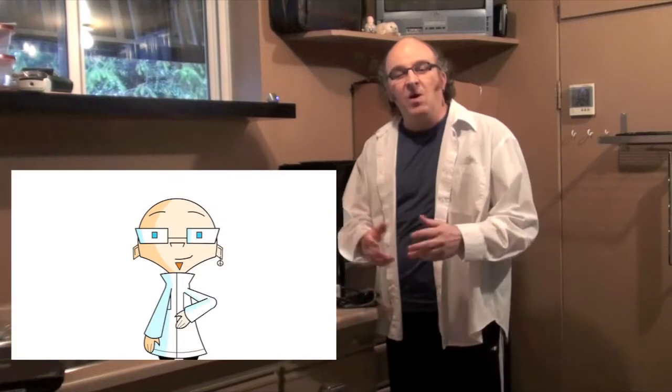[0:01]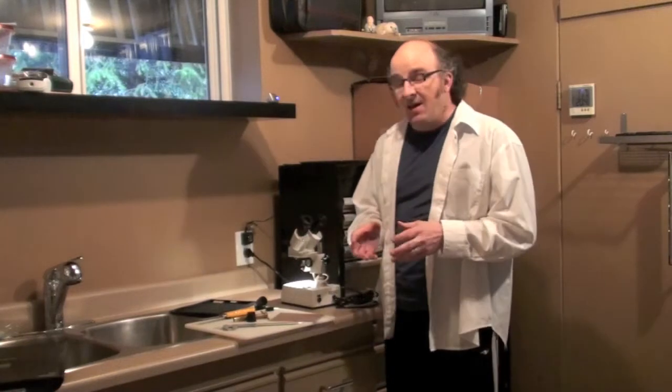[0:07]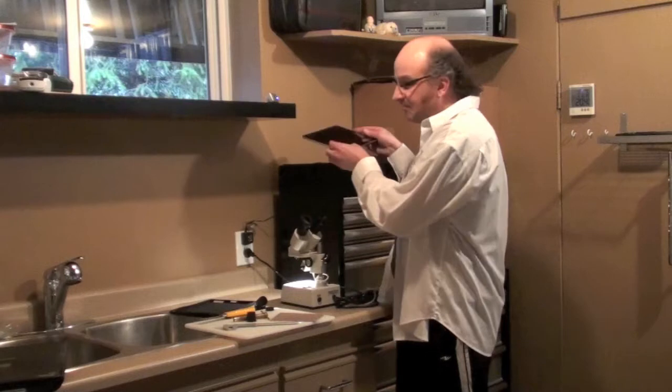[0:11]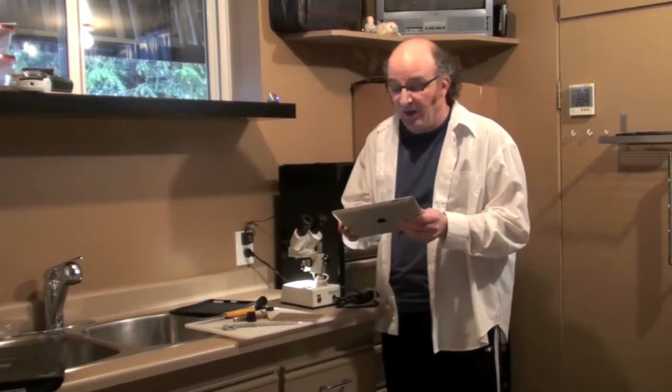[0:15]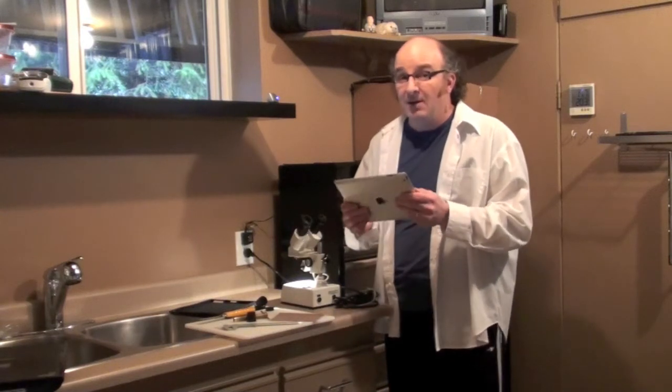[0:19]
Today we're going to do something a little bit weird. We're going to make an affordable microscope adapter for the iPad 3. And the really nice thing, and this will work for the iPad 2 as well, about the iPad 3 is the 5 megapixel camera, which makes it great for taking nice sharp pictures.
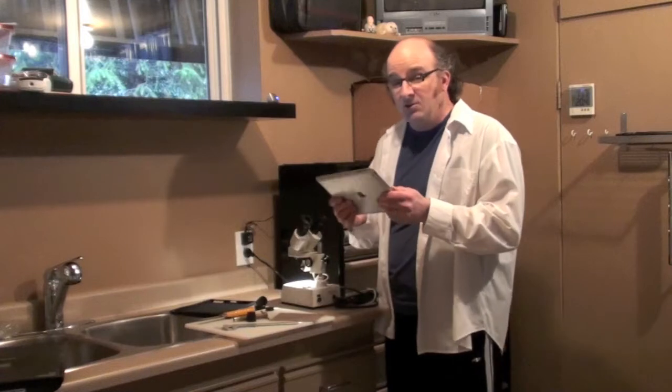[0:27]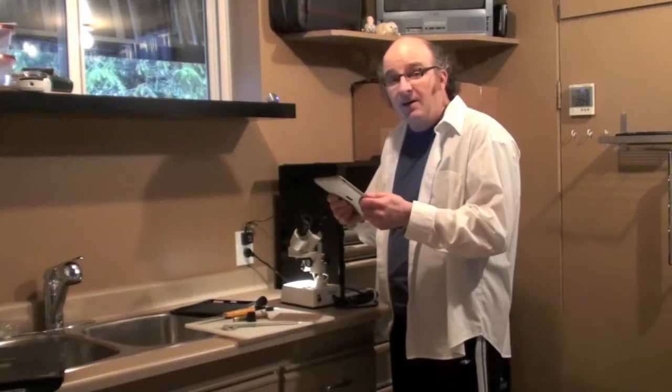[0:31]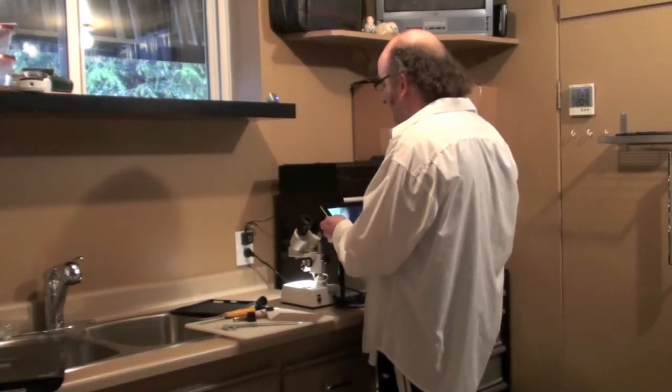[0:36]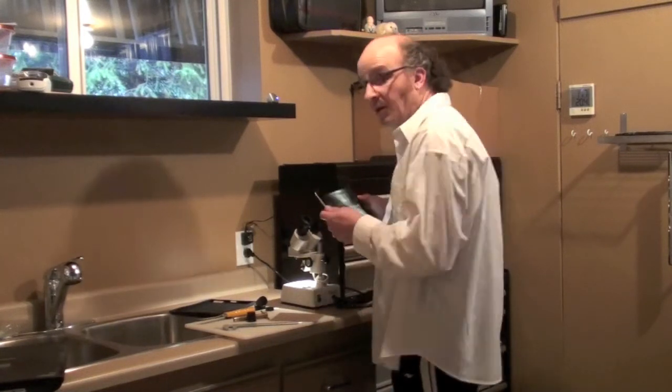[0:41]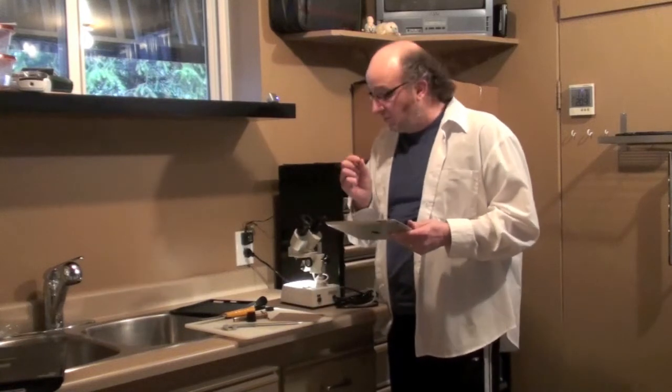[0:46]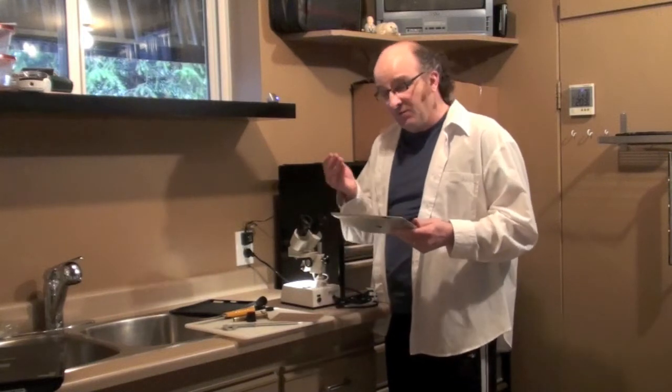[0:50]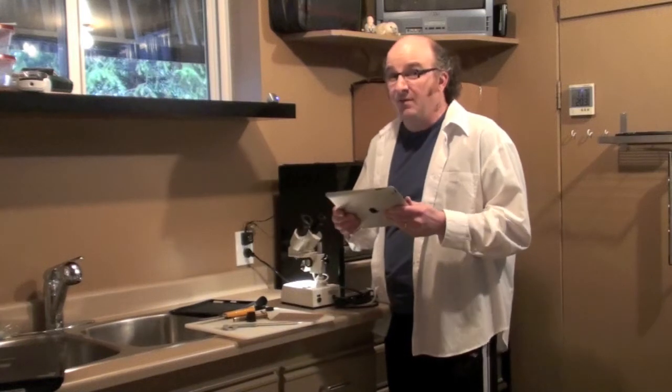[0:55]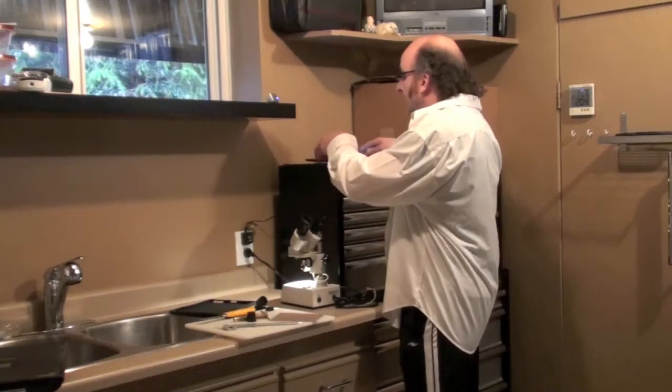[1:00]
Now if you want to use your iPad 3 to take images with your microscope, you can do it without any adapter. Just fire up your camera, and hold it in just the right position over the ocular lens, and at the right distance as well. But the lens of the camera is so small, and you have to hold it a distance from the microscope ocular lens, that it'll pretty much drive you crazy trying to hold it in the correct position. So to make an adapter,
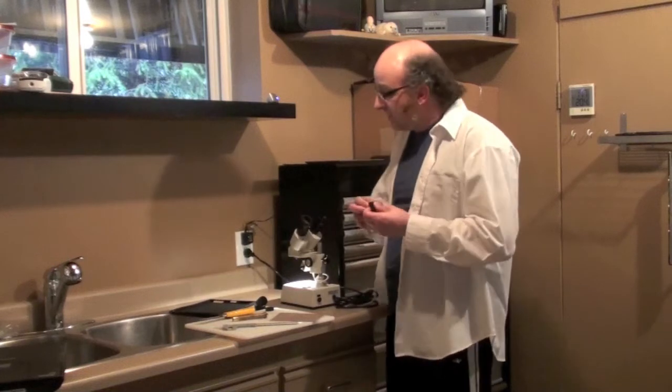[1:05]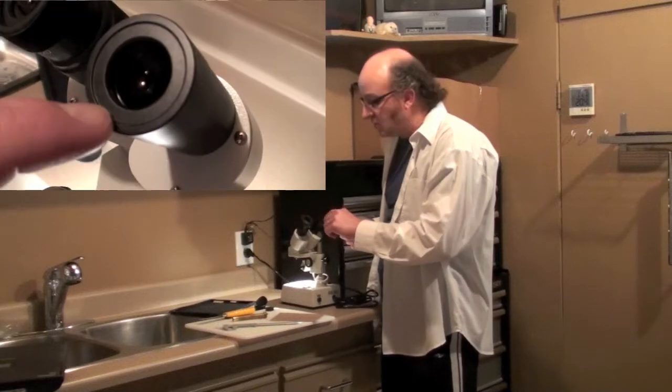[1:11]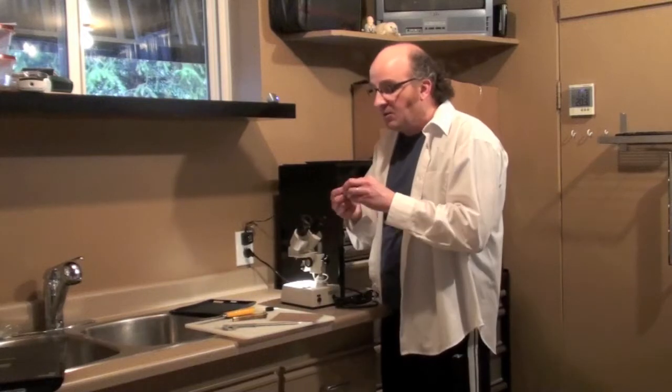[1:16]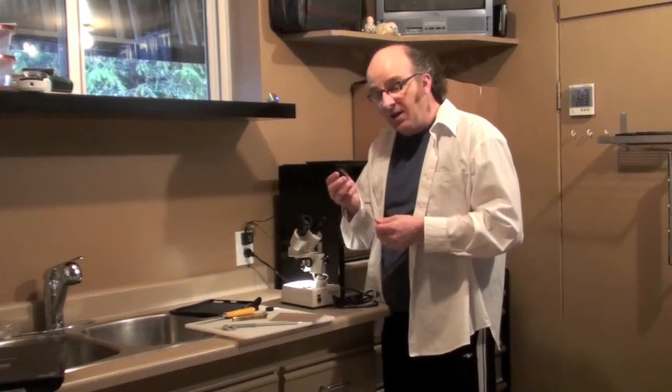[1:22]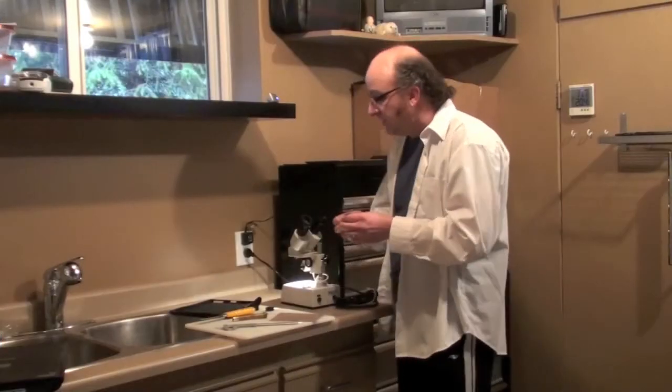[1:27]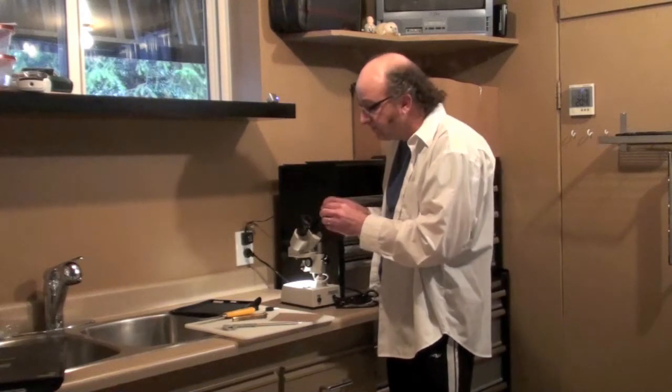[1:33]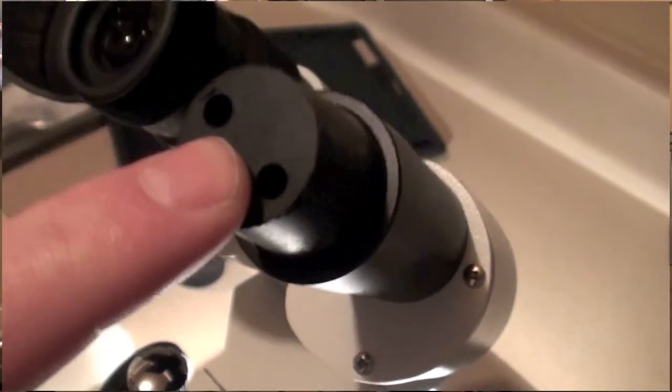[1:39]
you can do it pretty easily just by taking advantage of a neat little lip on these ocular lenses. Almost all these ocular lenses have a little bit of a groove. Usually they have them to hold these eye cups in place, but we're going to take the eye cup off, and then we're going to take a rubber stopper. I've found that a number 5 or number 6 rubber stopper works nice for this. Obviously it's going to vary depending on the size of your ocular lens, but a number 5 on mine fits just right, and you can see that it fits right in that groove and it doesn't move.
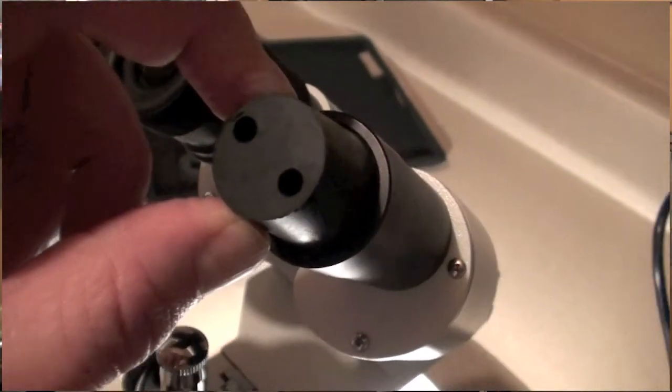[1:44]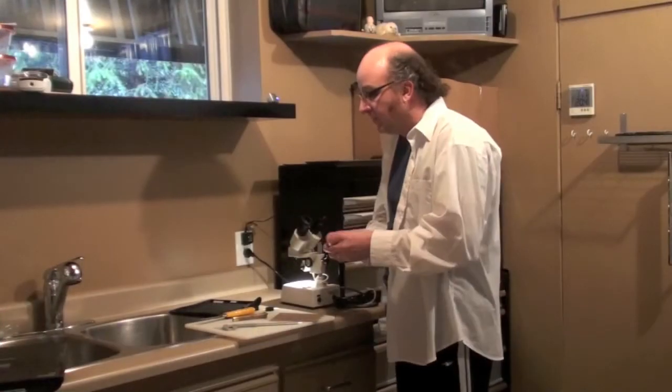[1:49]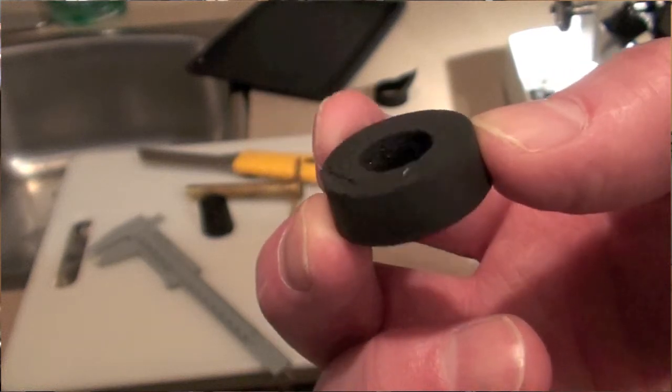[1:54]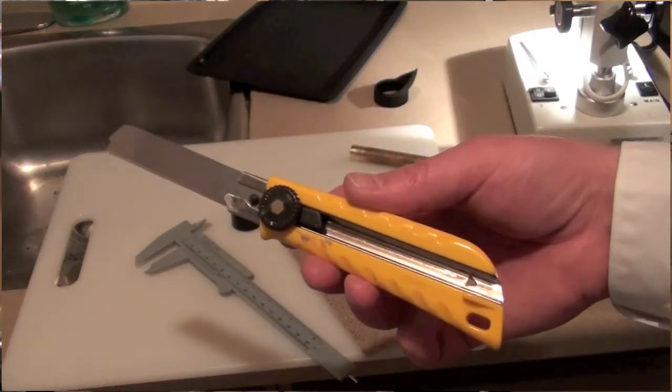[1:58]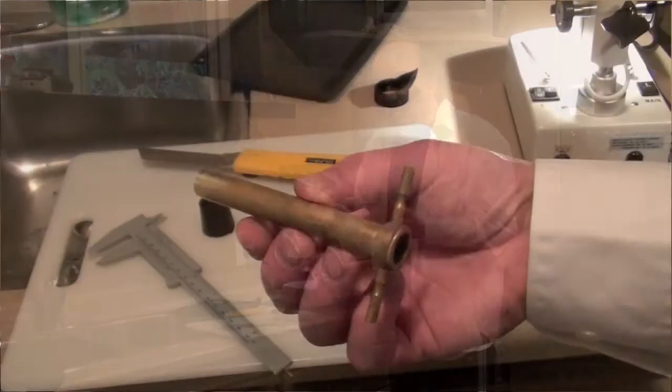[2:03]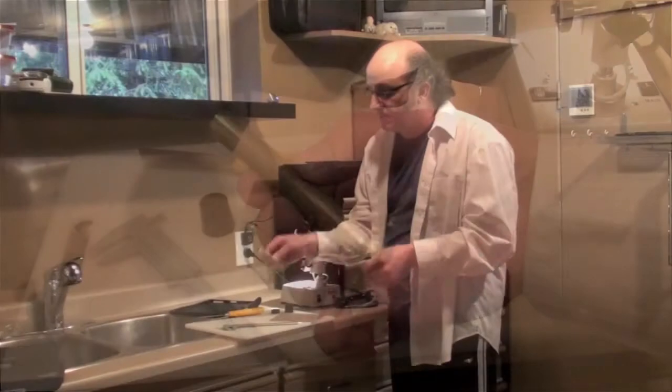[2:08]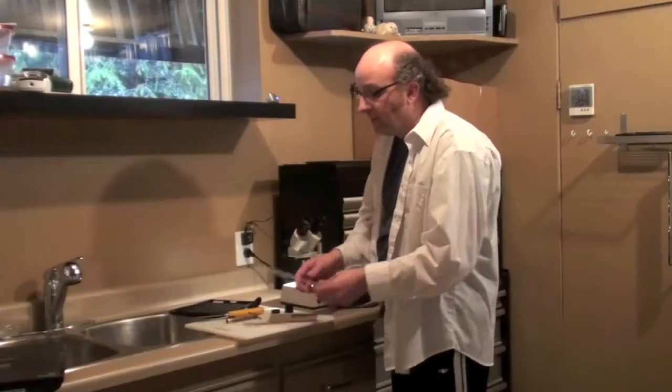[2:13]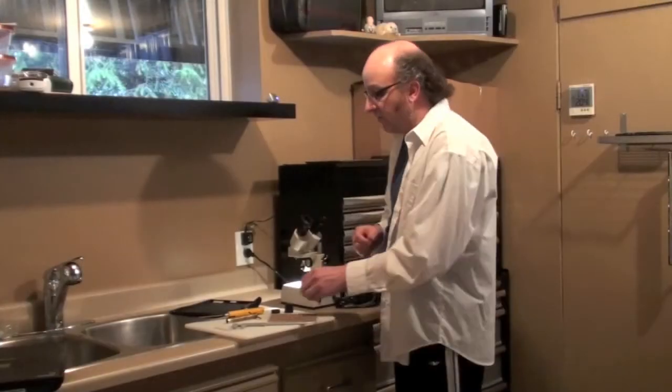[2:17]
So then what we're going to do is cut down and adapt this rubber stopper to the point that it looks like this. And to do that, very simple materials. All you need is an X-Acto knife and a cork borer. If you don't have a cork borer, there are other ways to drill a hole, but the biggest cork borer you have works really nice. Some sandpaper and a caliper just to check the thickness of the rubber stopper.
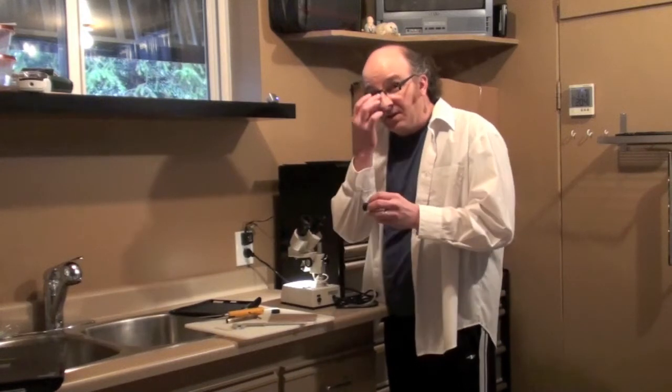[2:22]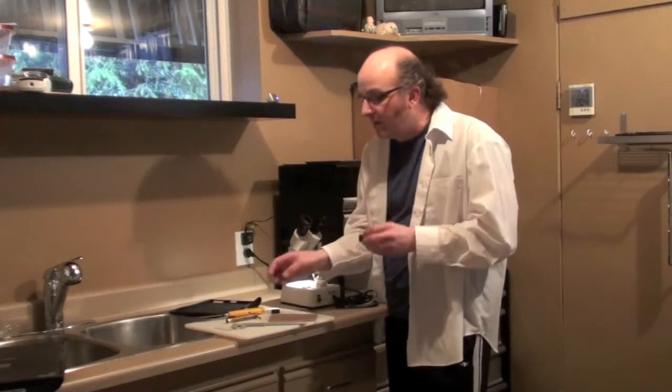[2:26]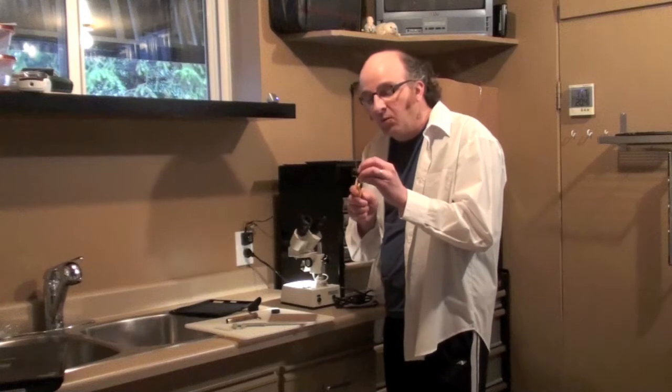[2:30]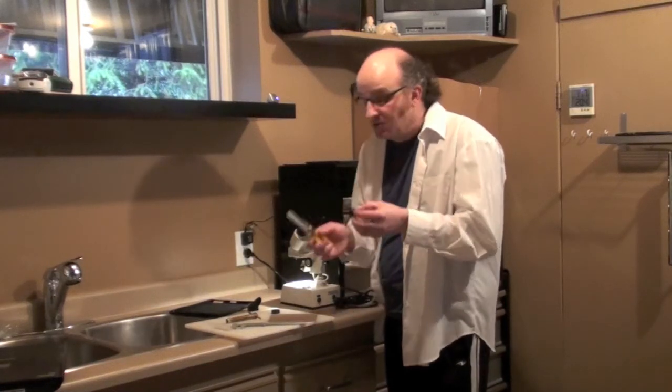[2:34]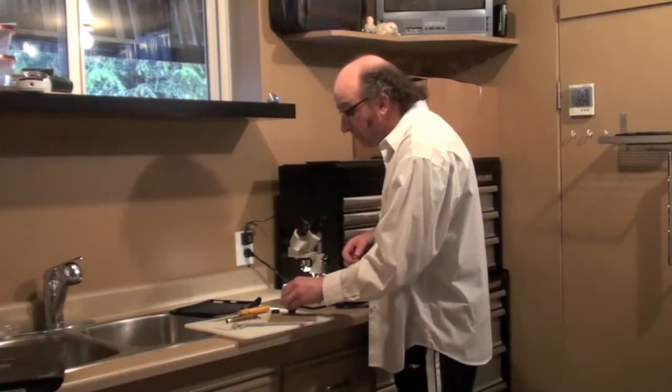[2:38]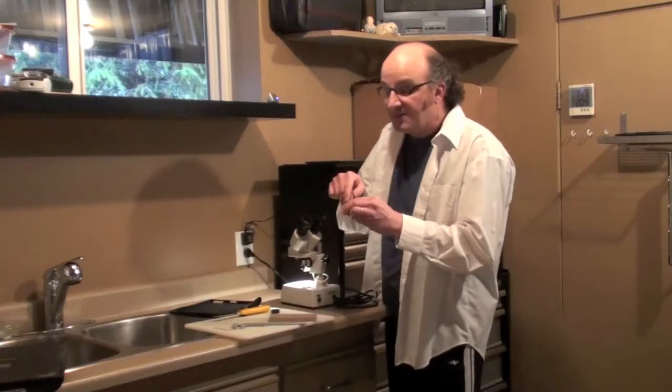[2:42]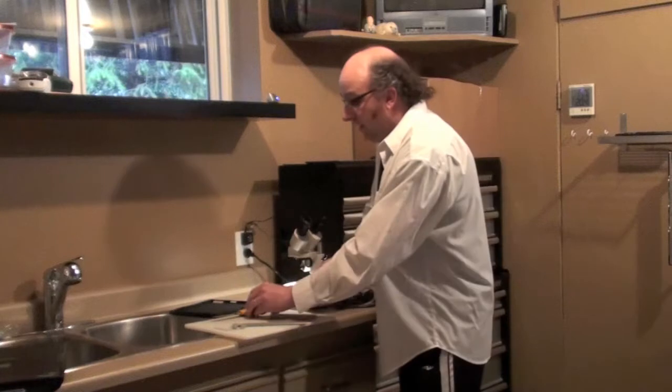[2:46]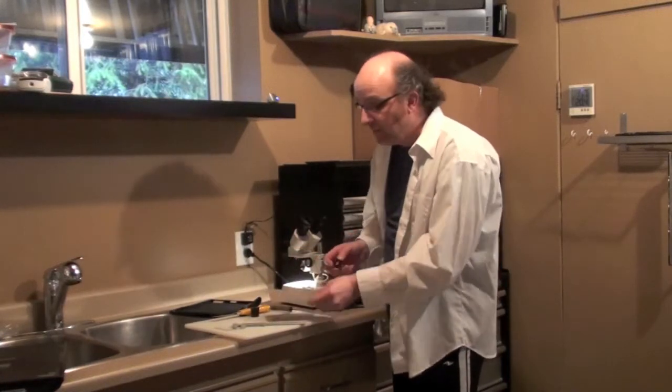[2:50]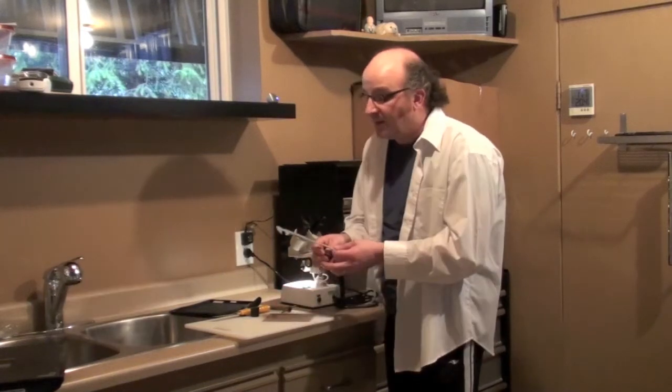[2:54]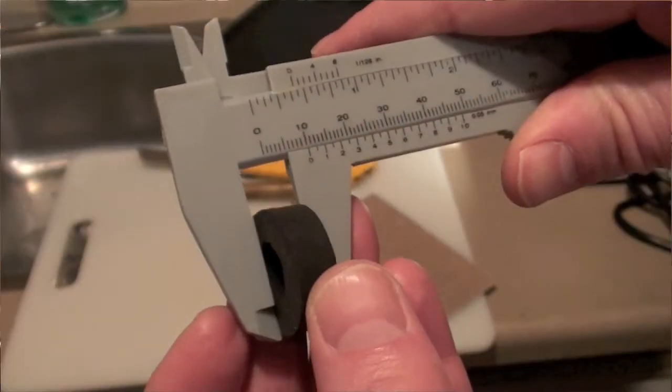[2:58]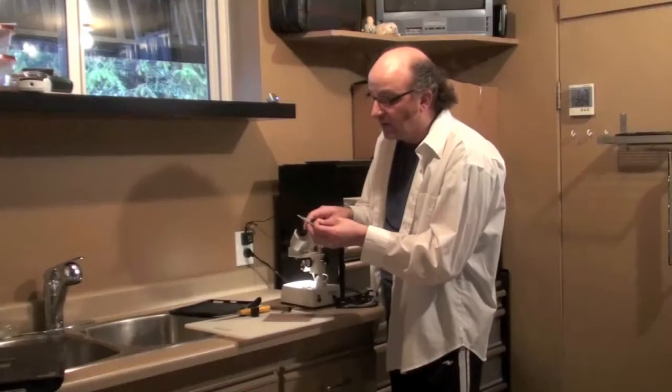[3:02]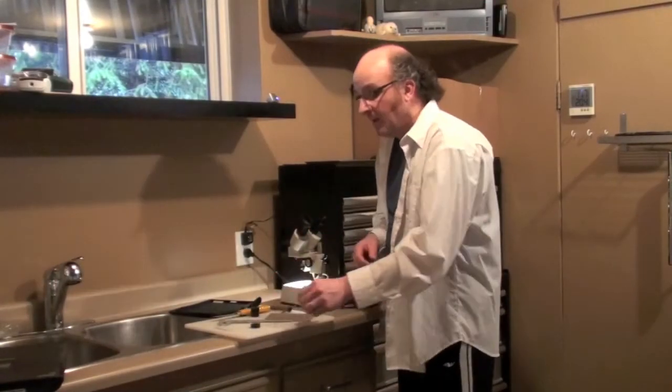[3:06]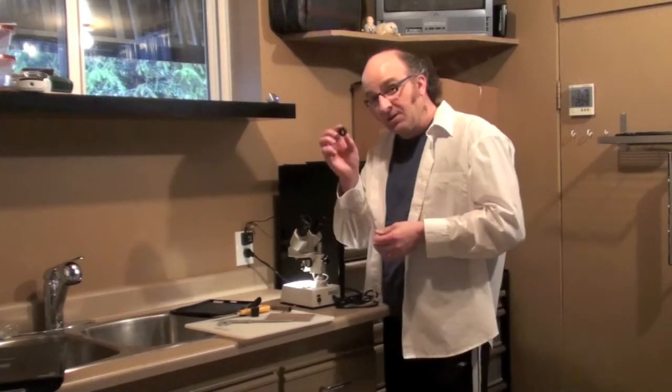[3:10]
So to do this, the thickness of the rubber stopper you're going for is about 4 millimeters. So just go a little bit more than 4 millimeters on your rubber stopper and cut it right off. Then use your cork borer to get right centered in what you've cut off and cut a hole in it. And then all you need to do is put your sandpaper on the counter and grind it off, and keep grinding and checking with your caliper until you get right at about 4 millimeters. 4.1 millimeters will be just fine.
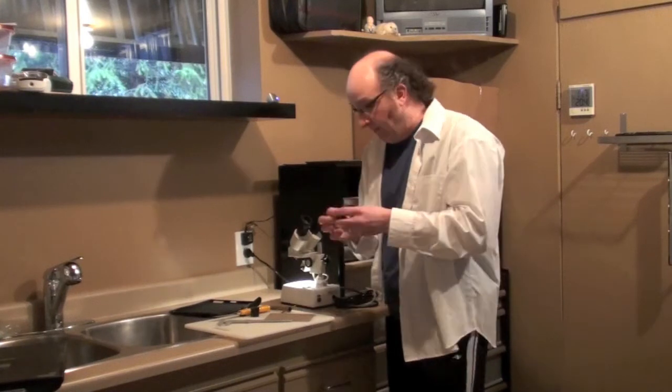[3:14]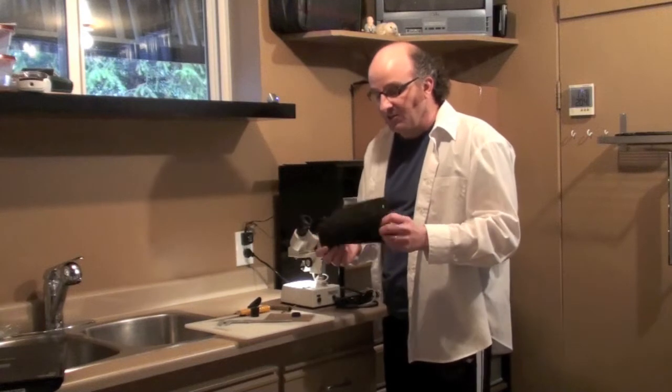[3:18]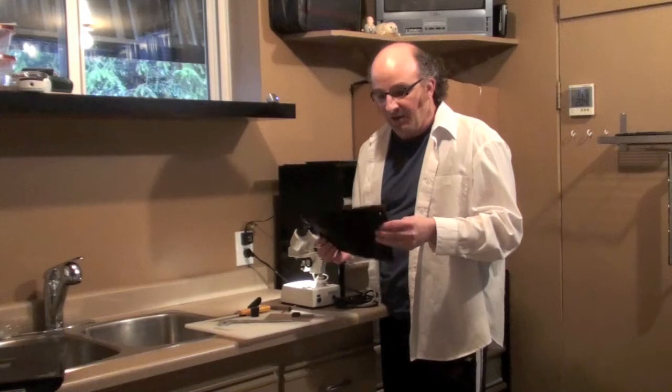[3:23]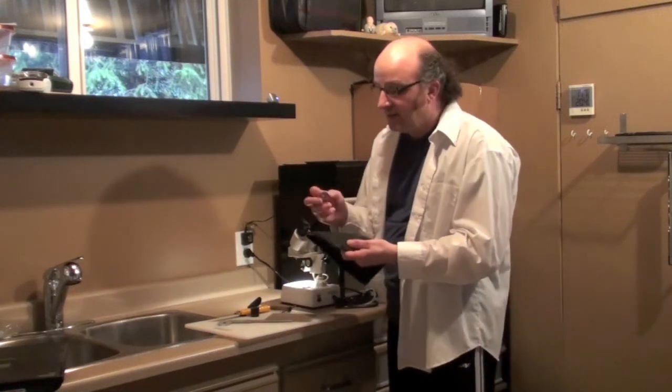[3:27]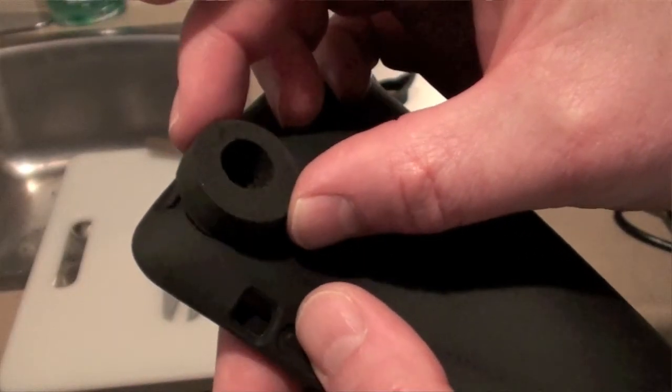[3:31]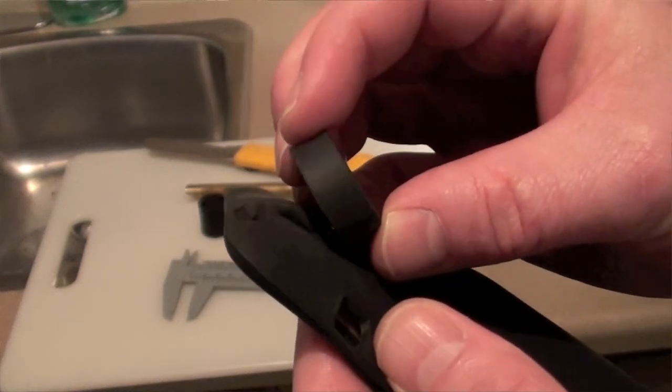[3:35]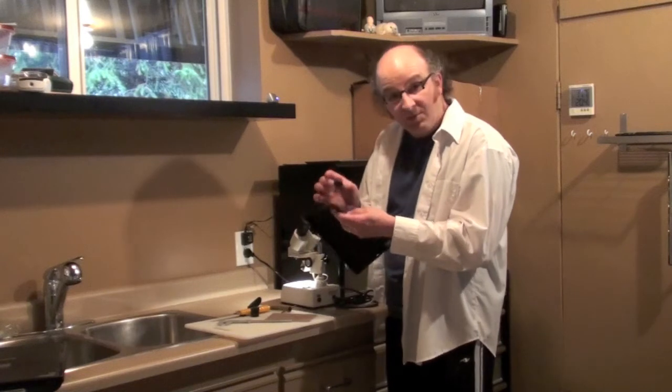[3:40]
Then we're going to take this rubber stopper that we've adapted, and we're going to attach it to a silicone sleeve. Now I just got this silicone sleeve for $8. Get the cheapest one you can. I got this on eBay, and the idea is we're going to use a little bit of epoxy to attach that rubber stopper right in that position. Okay, so let's take a look at the final product and some images that we get from our new system.
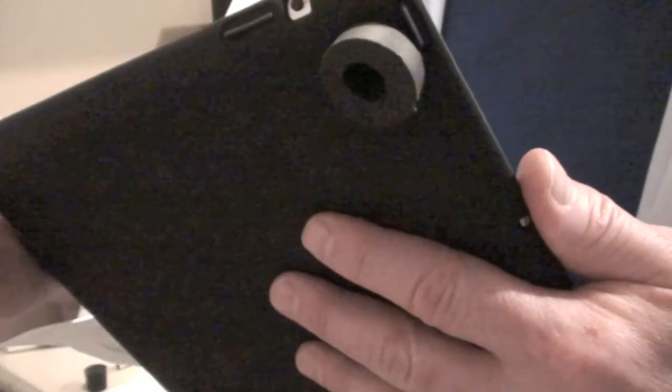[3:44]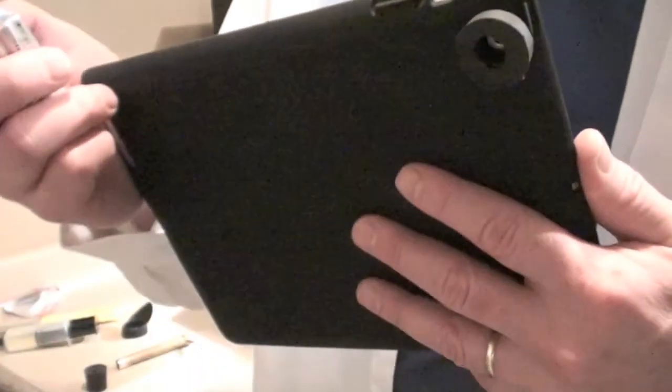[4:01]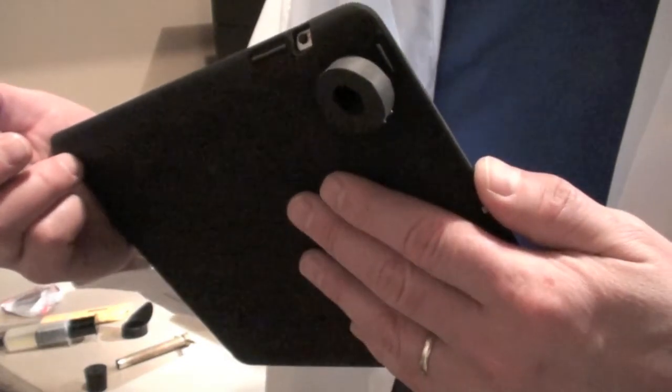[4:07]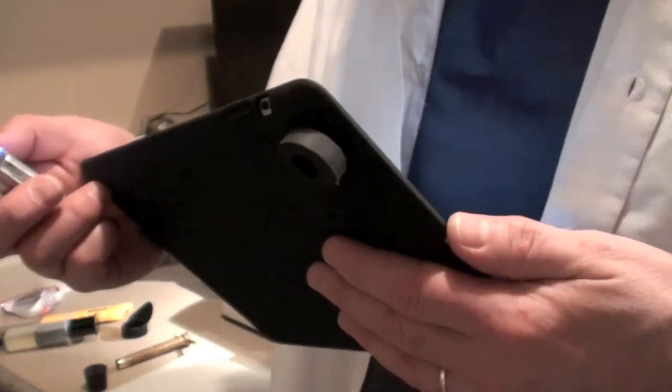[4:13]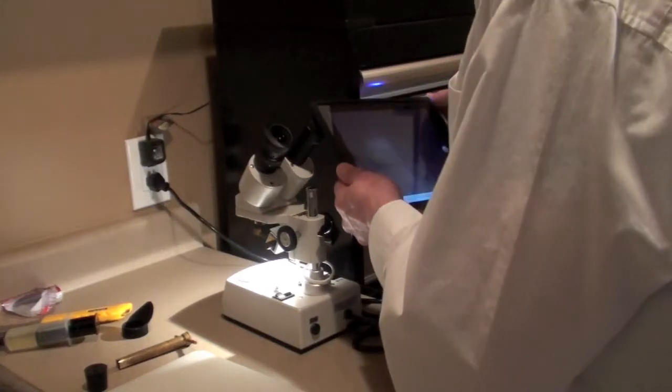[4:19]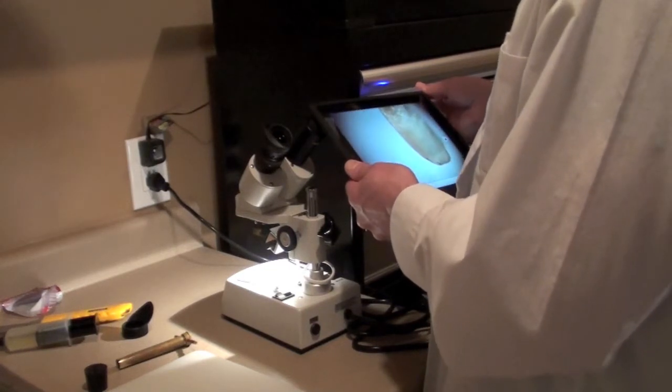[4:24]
So here's what the final product will look like. Your rubber stopper will stick out the side a little bit off the tapered edge. That doesn't matter. There's no need to glue it over the tapered edge. You only need to glue it on the flat part of your cover. Another tip is to rough up the cover a little bit where you're going to glue it with some sandpaper. That'll make the glue stick a little better. If it doesn't stick the first time, just keep trying. And then you're ready to go. All you need to do is now flop your iPad onto your microscope, and it'll be in the perfect position every time you want to take an image.
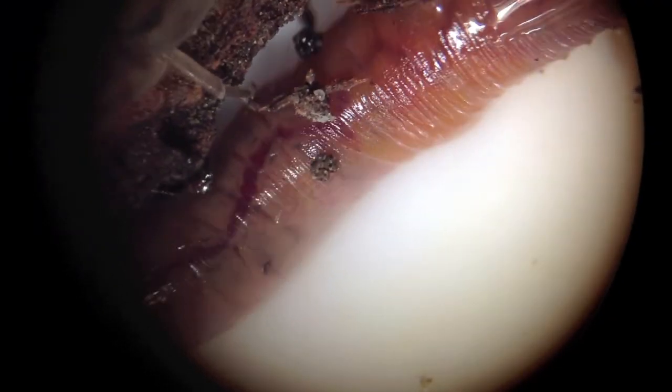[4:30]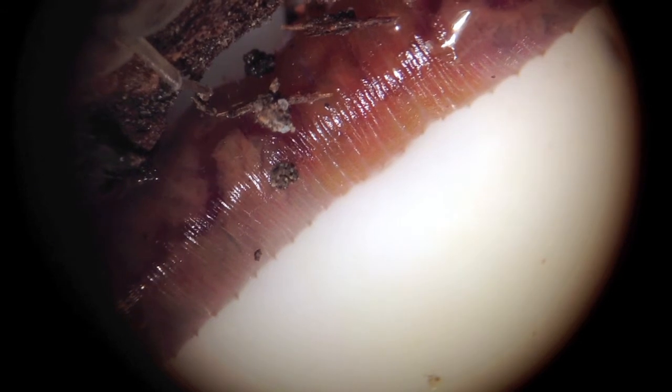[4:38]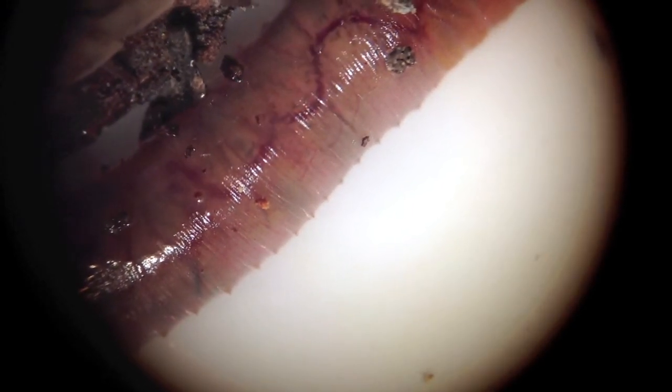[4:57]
So here we have a little bit of footage for you. I just grabbed some stuff from the garden and threw it under the dissecting microscope. We have some very clear, beautiful footage of a worm here. You can even see the pulsing of its circulatory system. You can also see the edges of the field of view, and if yours are a little bit too narrow and you don't like what you see, you may want to just pop your adapter back off your iPad and tweak it a bit more, maybe do a little bit more sanding, make it thinner. You might have to make two or three attempts until you get it just right. Don't give up. You'll get it.
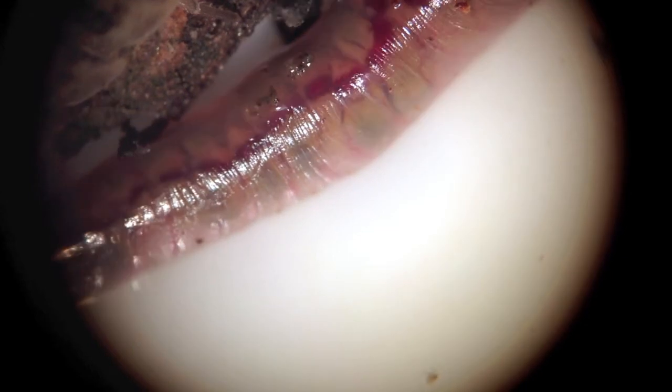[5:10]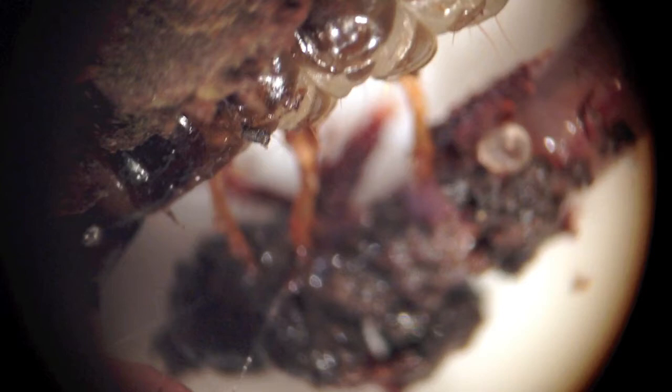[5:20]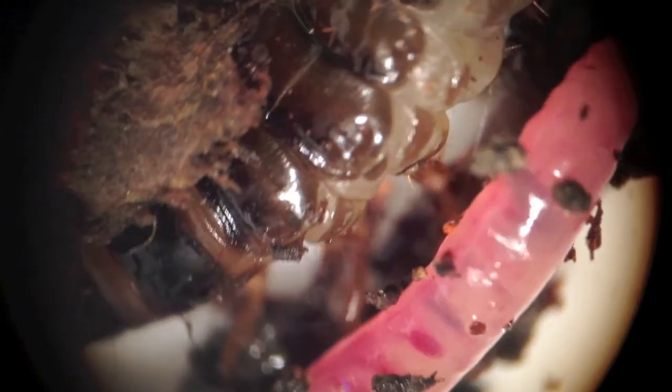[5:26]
As for using this with students in the classroom, if you're lucky enough to have an iPad or iPads, once you have these adapters on, it's just great for moving from microscope to microscope. And students can even work in pairs, as one holds it to the microscope, another can do the focusing, so you can actually do your focusing and see that right on the iPad.